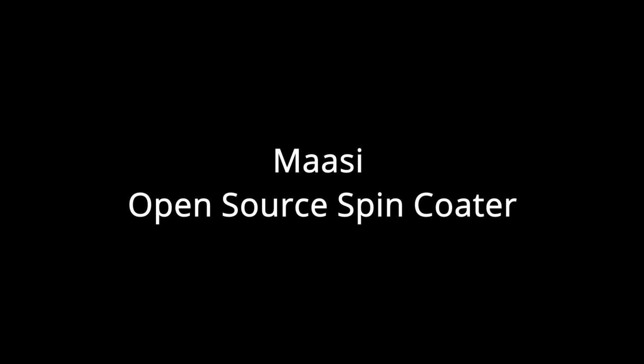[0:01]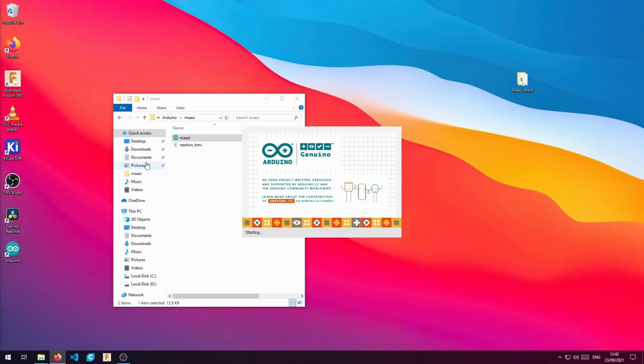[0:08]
How to build a Maasi open source spin coater. You're gonna need the parts you see in this picture. The first step is to compile and flash the ESP32.
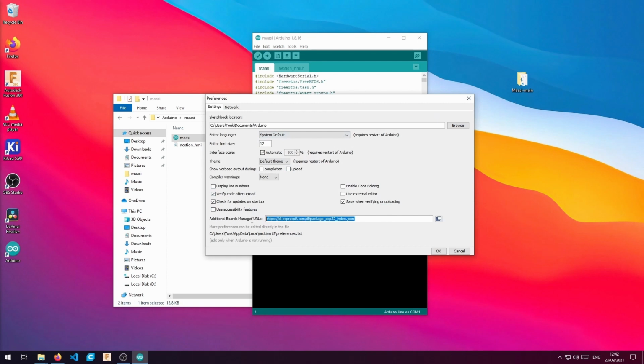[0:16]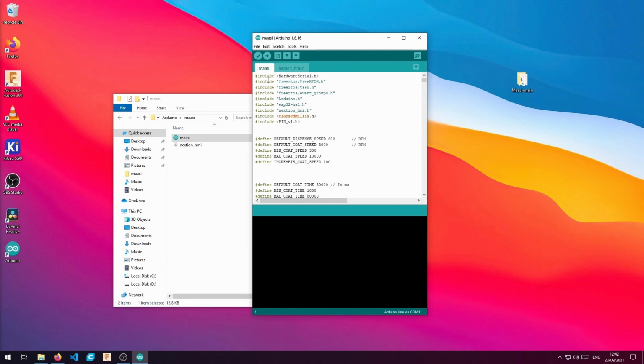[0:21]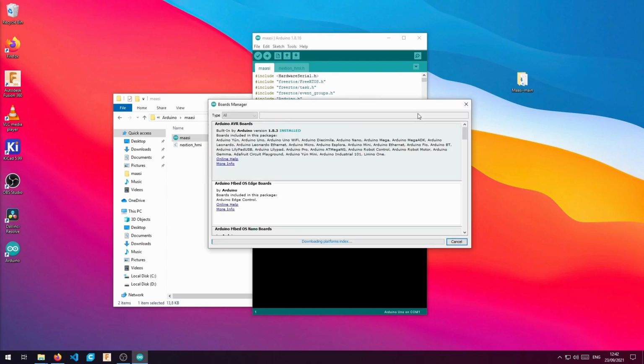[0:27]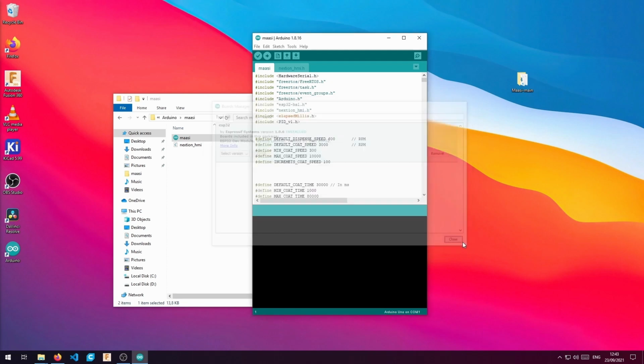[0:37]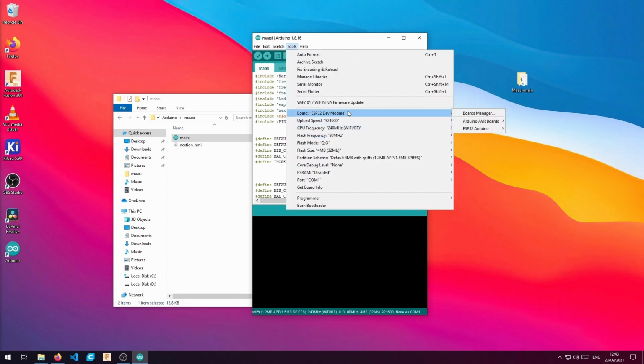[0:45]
To do so, we have to open the Arduino file and then make sure we have the Espressif board manager installed. You can find this address in the description of the video. Then, we will go to Boards, Boards Manager, and we will install the ESP32. We will select the dev module. After we plug in our ESP32, we will select the COM port.
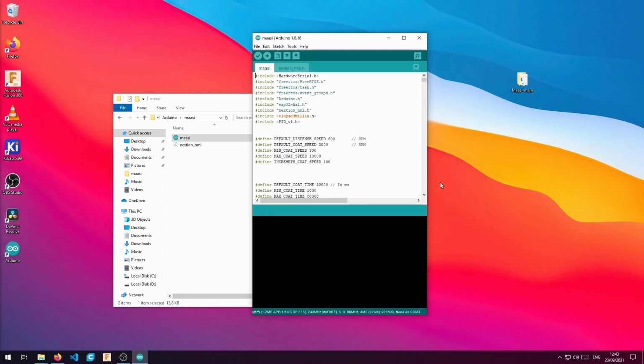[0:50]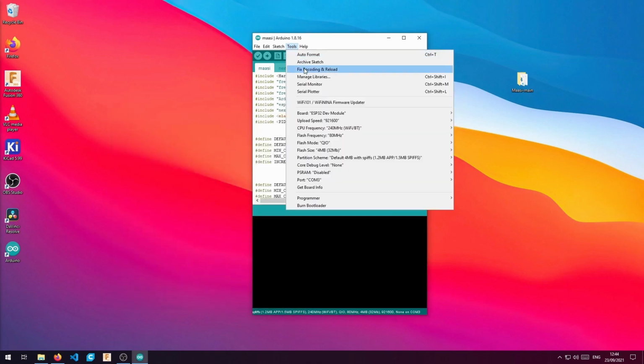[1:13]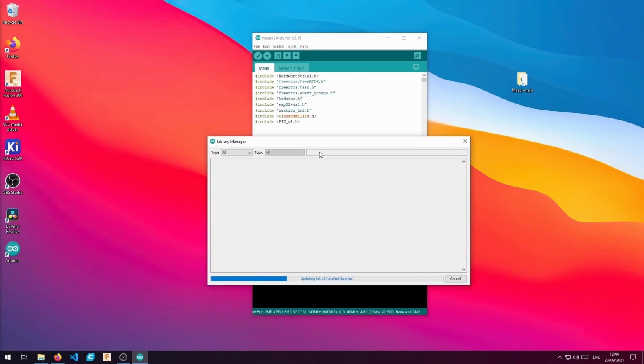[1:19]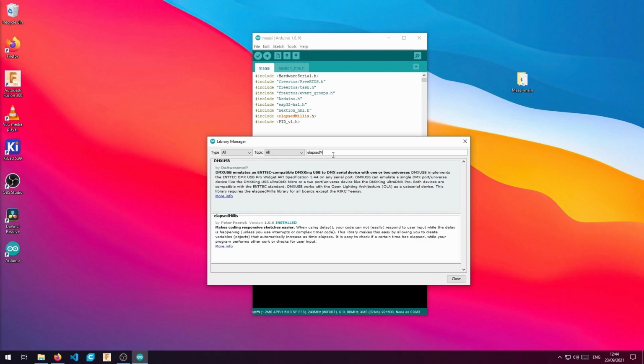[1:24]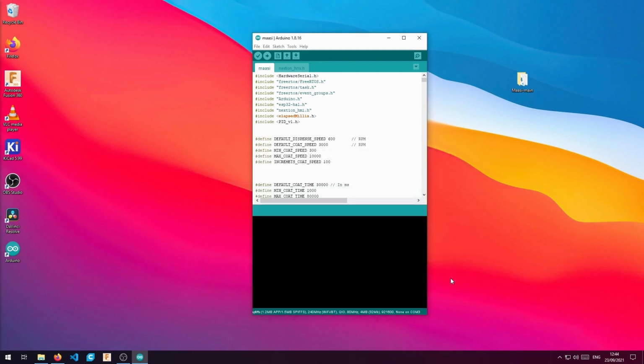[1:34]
Next step is to copy our Nextion library into the Arduino folder. As we see here, we already did this step before. Now we have to solve the other dependencies. We go to the library manager and we install elapsed millis and the PID library. Now we are ready to compile and upload the firmware.
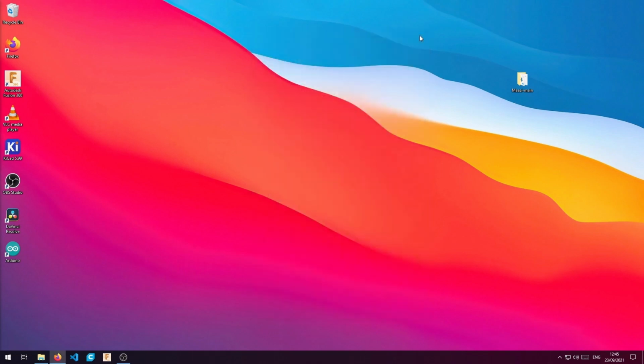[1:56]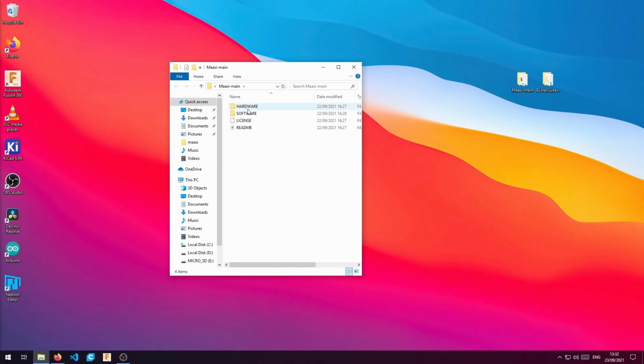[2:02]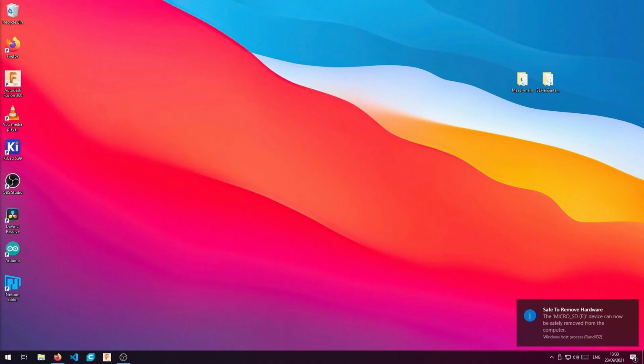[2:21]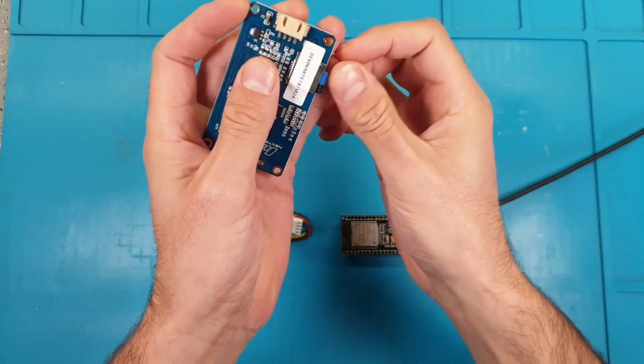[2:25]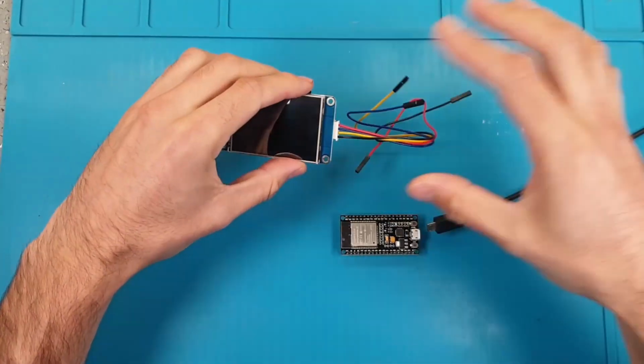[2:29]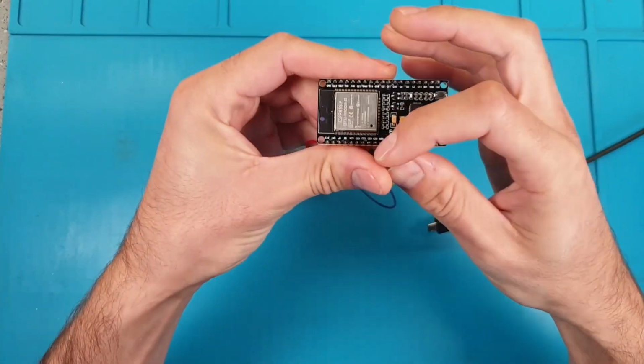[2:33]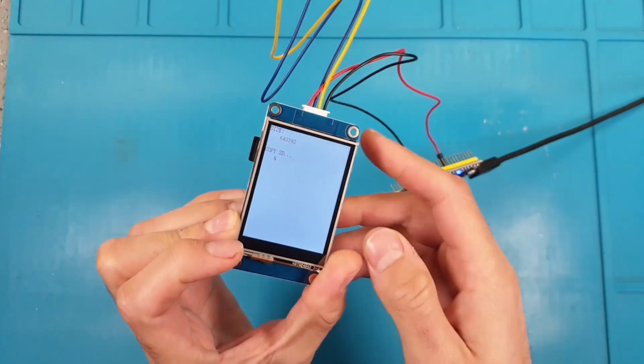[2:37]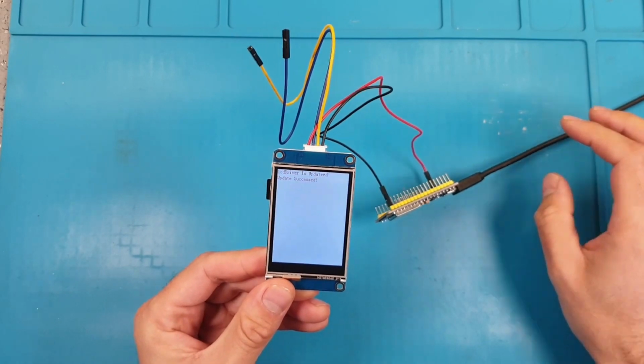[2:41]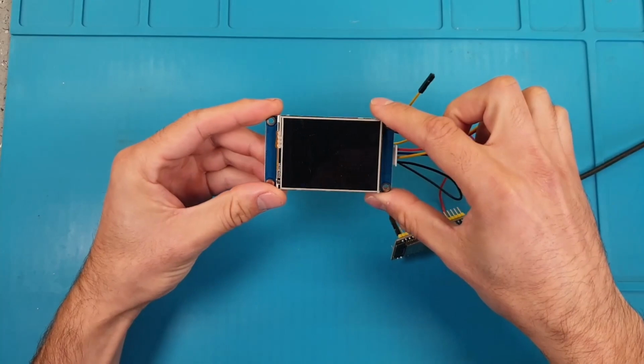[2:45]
Next step is to flash the Nextion display. We only need to copy the precompiled project in our Nextion folder to our micro SD card. Then we have to install the micro SD card in our Nextion display. And we are going to use the ESP32 to power the display. So we have to connect the red and the black cable to 5V and ground respectively. Then we have to power the ESP32 and wait for the display to flash the firmware. When it's finished, we can remove the microSD card and reboot to check it's working.
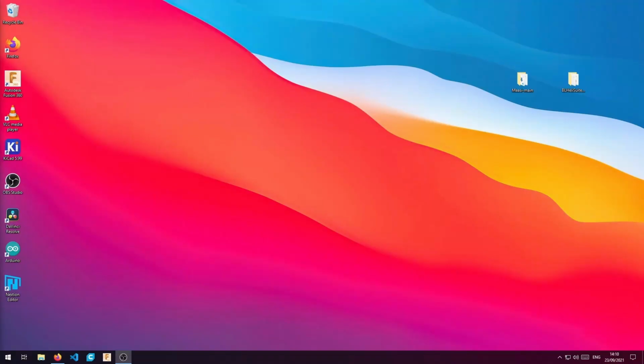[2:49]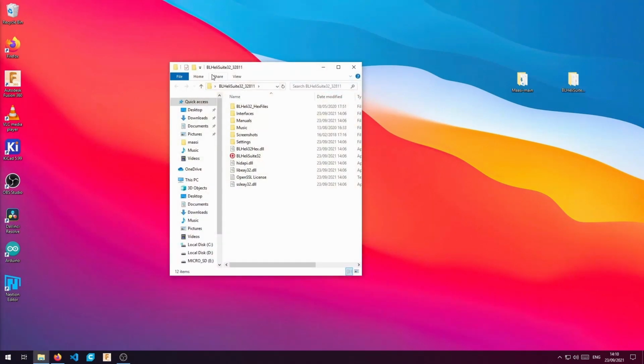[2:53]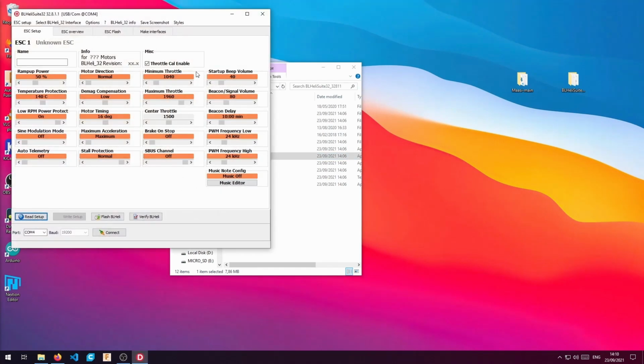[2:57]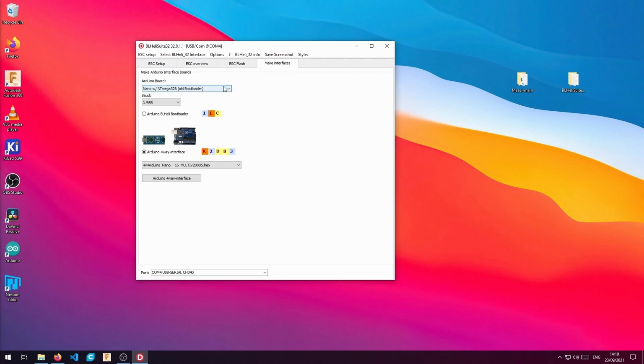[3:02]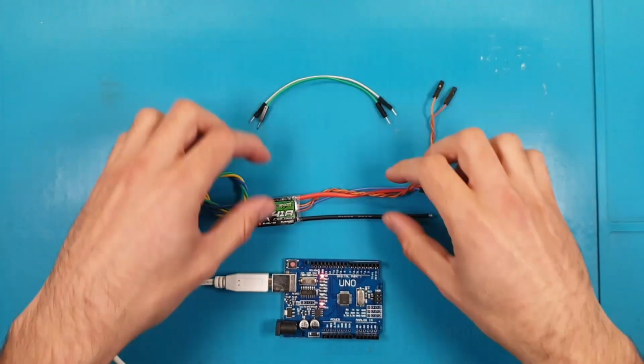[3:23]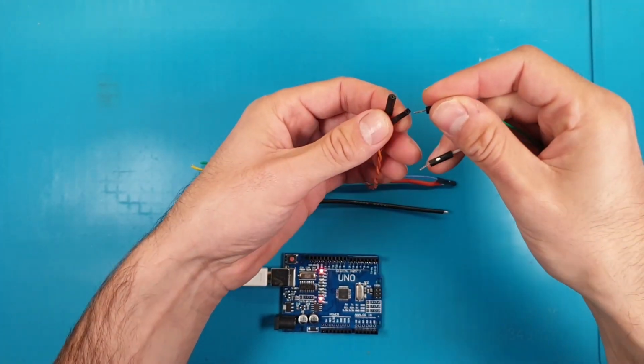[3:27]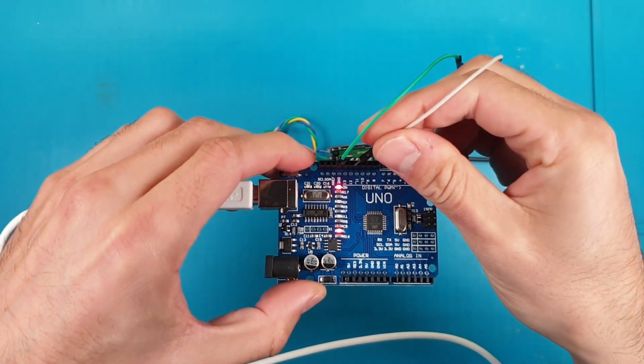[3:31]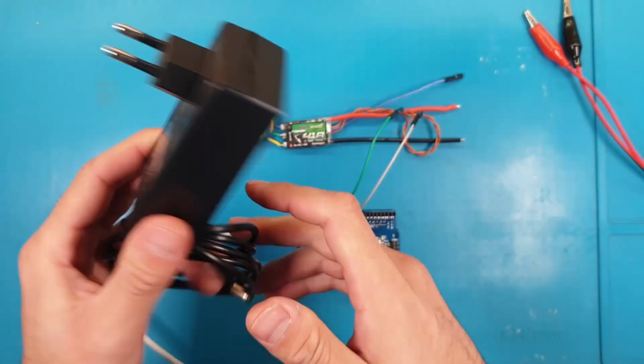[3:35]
The next step is to flash the ESC with the latest BLHeli32 firmware. We will need to download the BLHeli32 suite and prepare the Arduino Uno as flashing device. We select our Uno port and the corresponding COM port. Now we have to connect some jumper cables between the Arduino Uno and the ESC. One is the ground cable and the other is the signal. The signal cable connects to pin number 11.
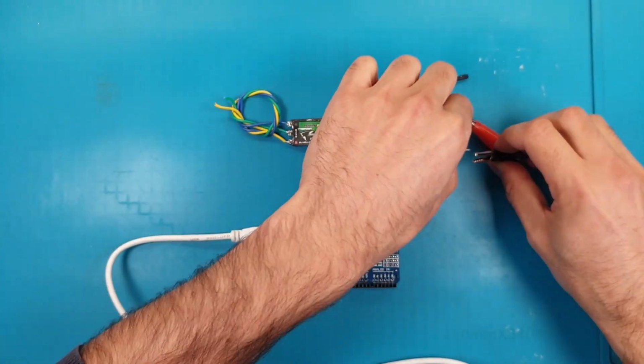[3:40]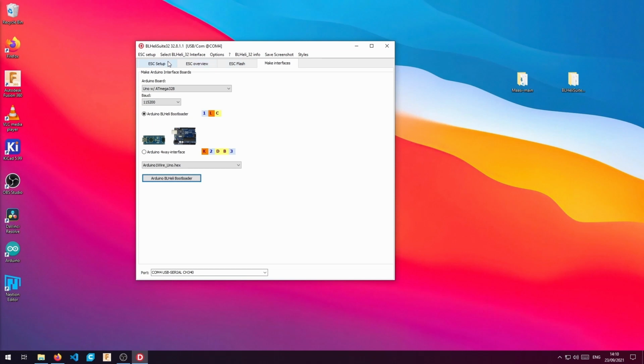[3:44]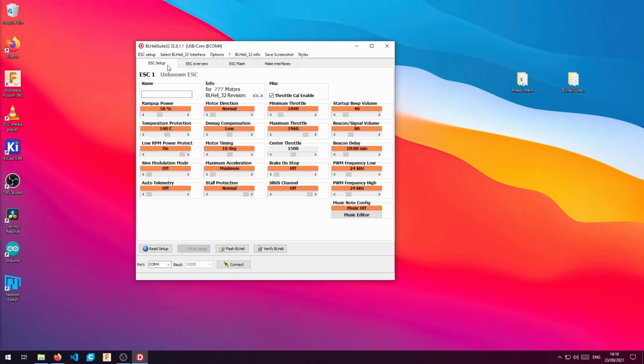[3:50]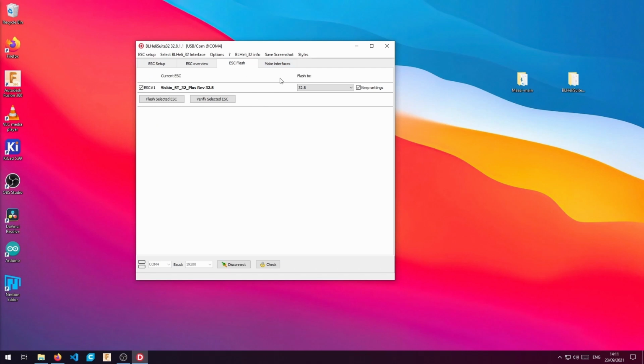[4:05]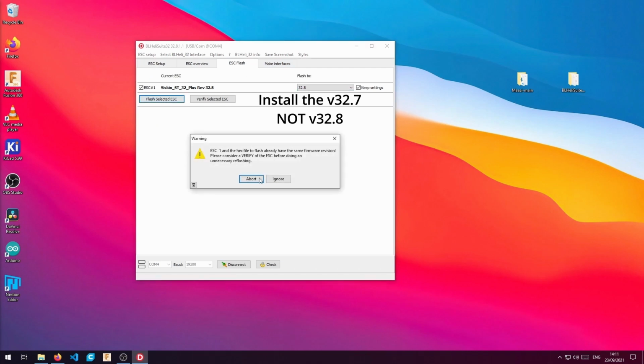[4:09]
And now we have to power the ESC. We can either use a lab power supply or the one for our spin coater. Now in the software we have to choose the USB COM option and make sure the COM port is the correct one. Now we connect and we read the setup. It's important to install the 32.7 version. Newer versions of the firmware will cause instabilities.
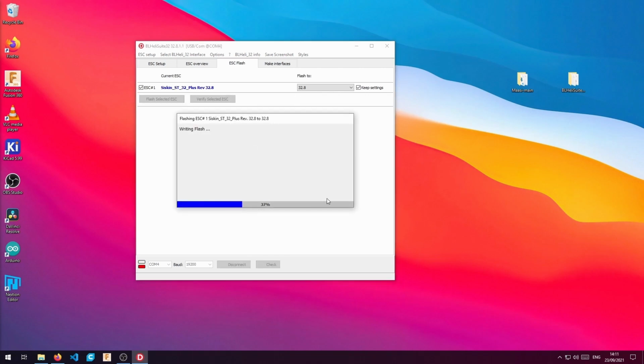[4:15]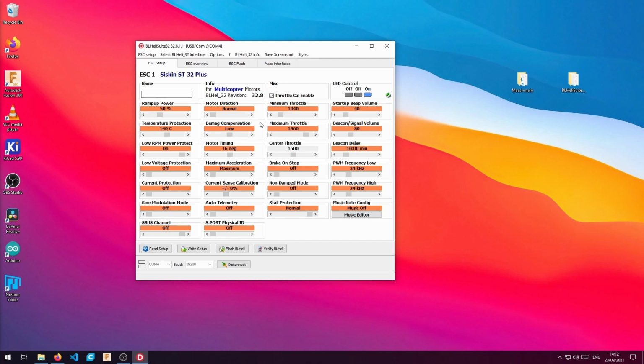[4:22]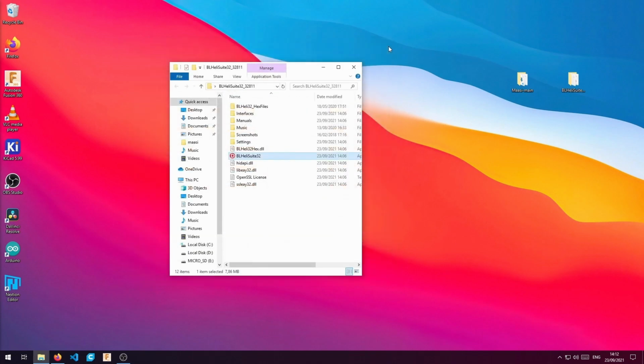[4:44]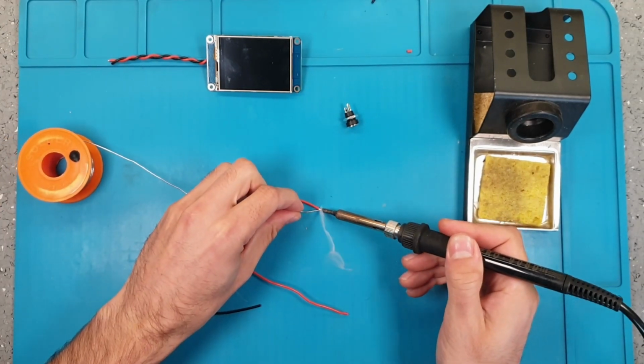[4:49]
Once it's finished, we come back to the ESC setup tab and we read again the parameters. We will increase the beacon delay to avoid having the ESC beeping after some period of inactivity. We can also reduce the volume and switch off the LEDs. Finally, we will write the setup and disconnect. Congratulations, you're done with the flashing of the electronics. Now we can start putting together all the components.
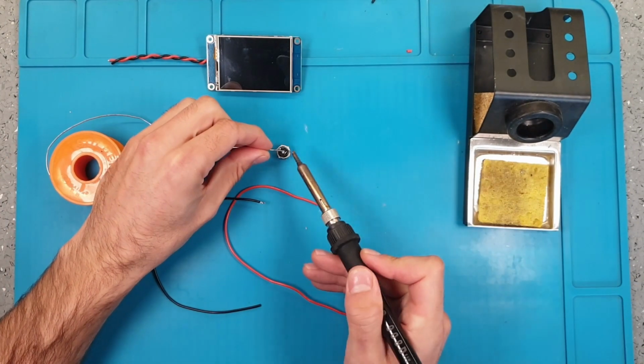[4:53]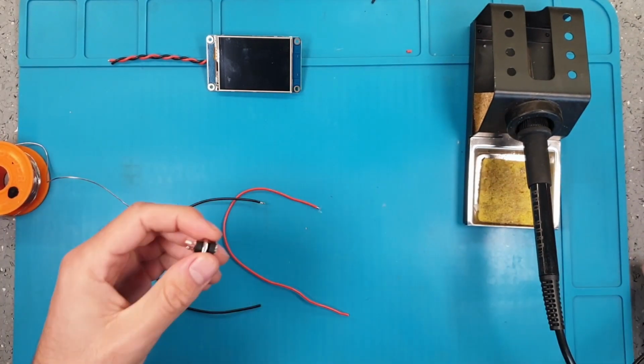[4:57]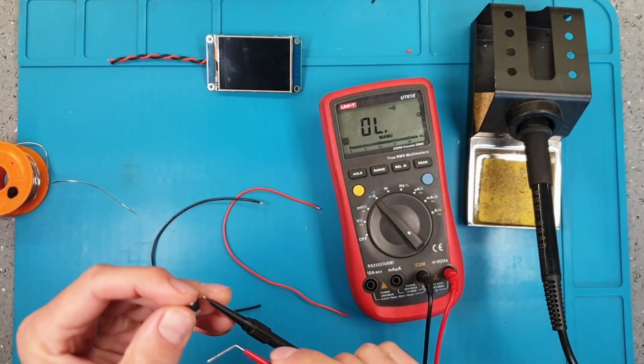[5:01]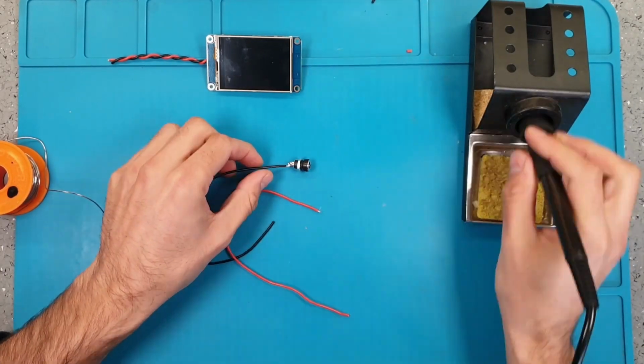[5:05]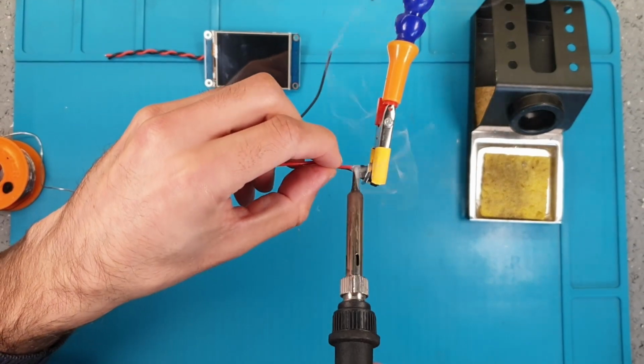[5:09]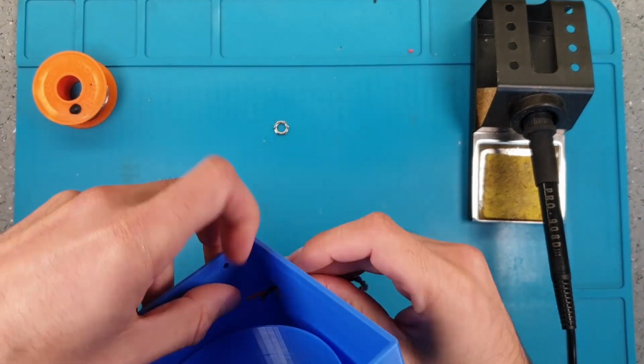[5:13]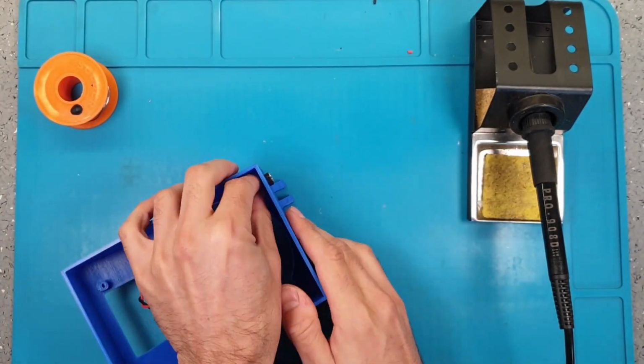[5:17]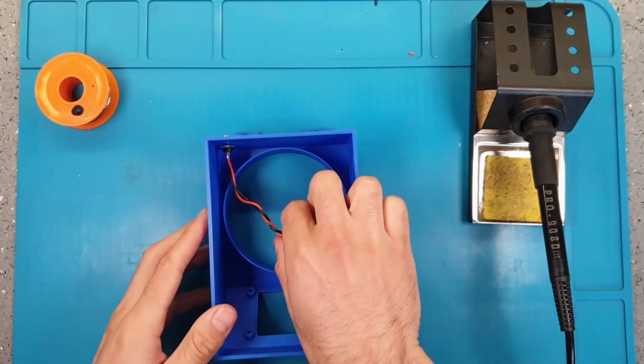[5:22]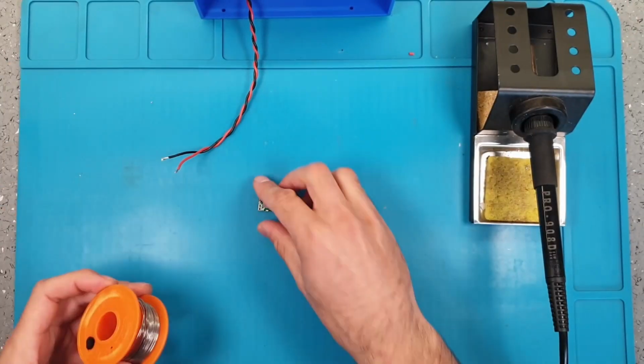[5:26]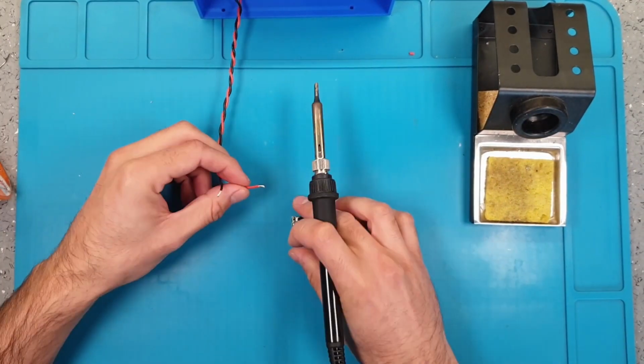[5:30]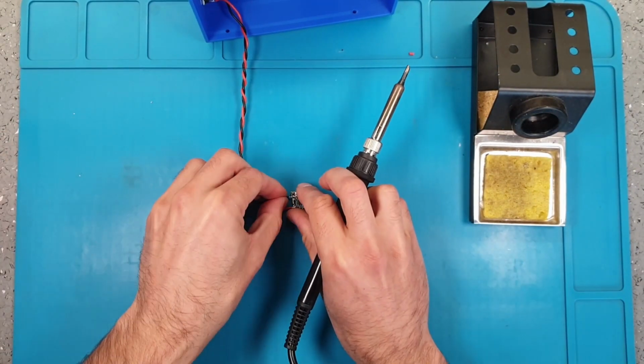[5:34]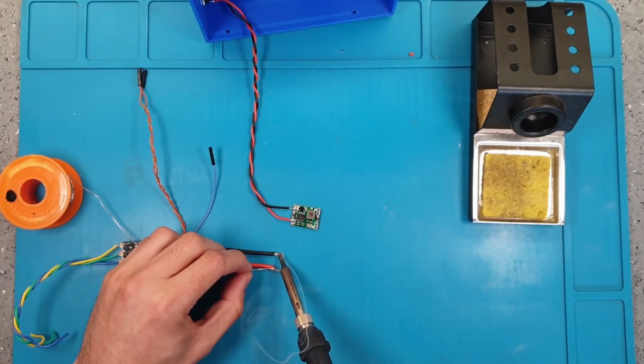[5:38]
We will start with the power plug. As you can see in the video, it's very useful to pre-tin the cables and the pins. Then with a multimeter, we will make sure the polarity of our plug matches the polarity of our power supply. After securing the power connector, we will solder the DC-DC. And then the ESC power.
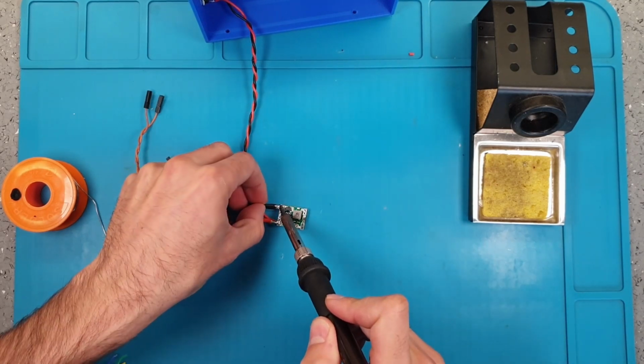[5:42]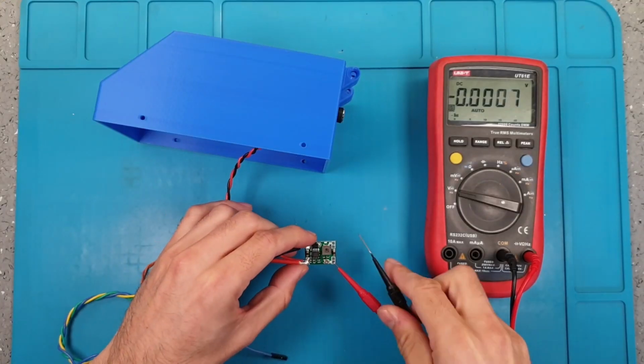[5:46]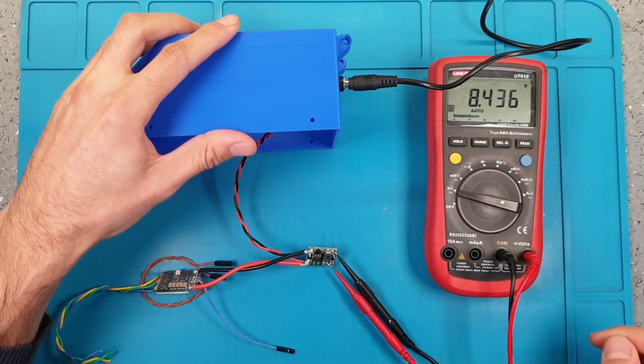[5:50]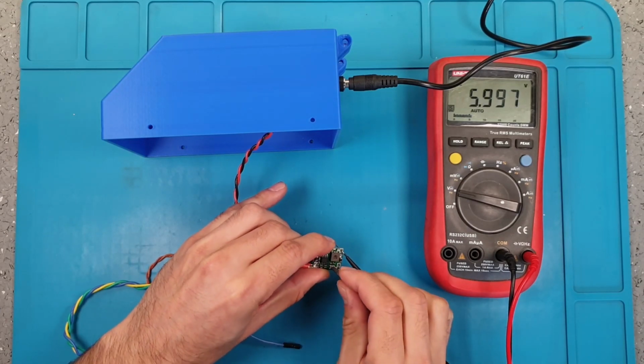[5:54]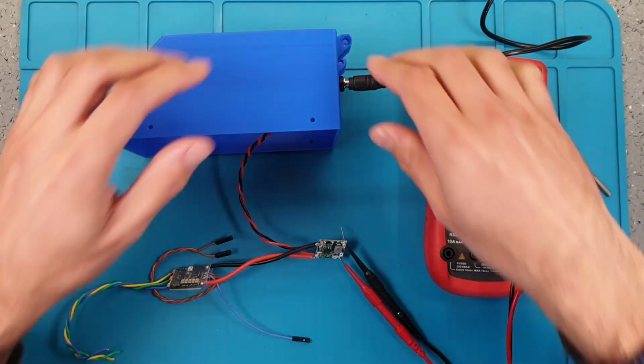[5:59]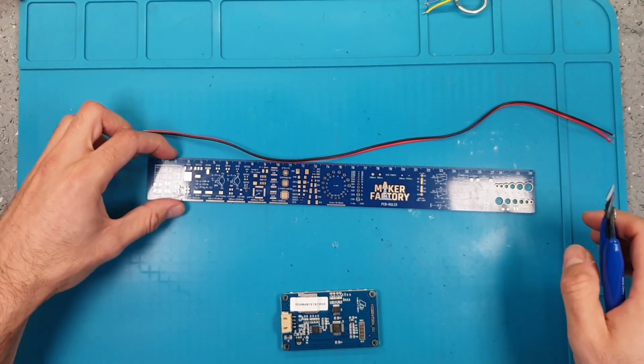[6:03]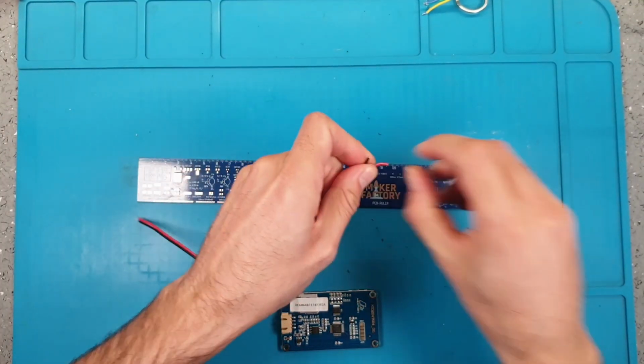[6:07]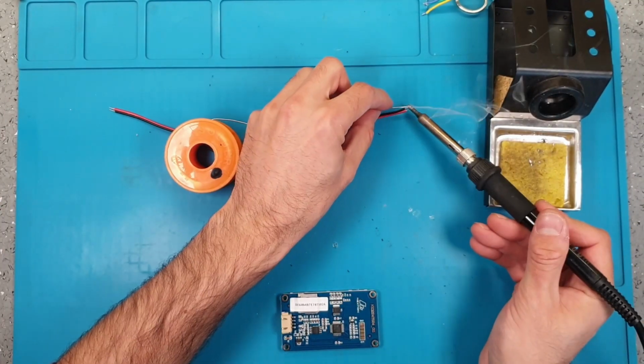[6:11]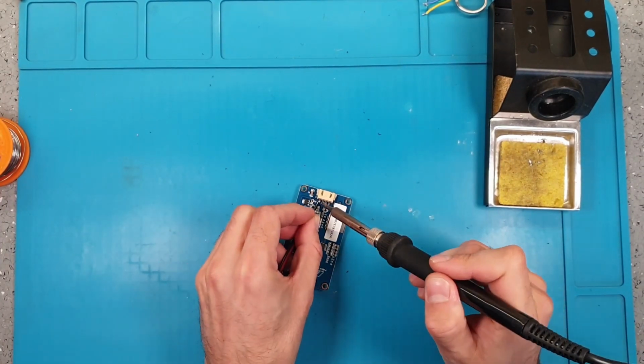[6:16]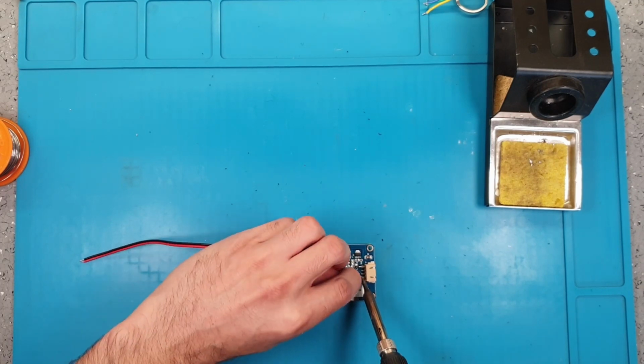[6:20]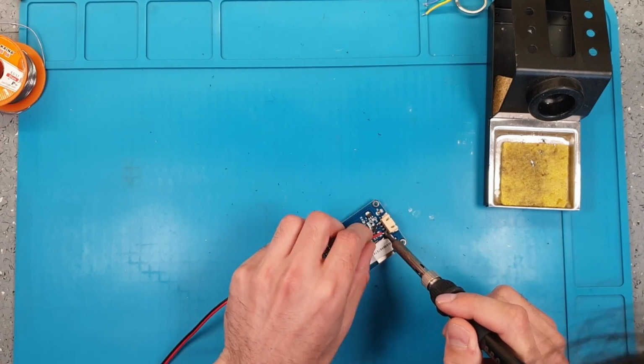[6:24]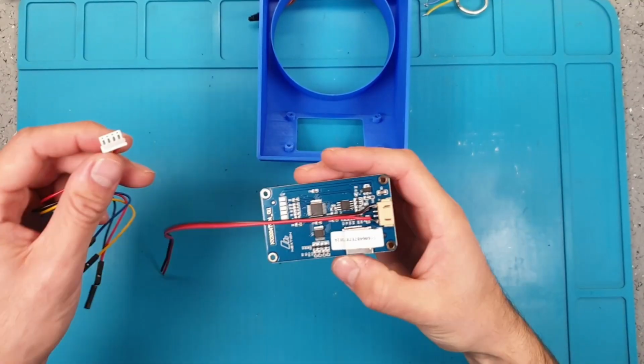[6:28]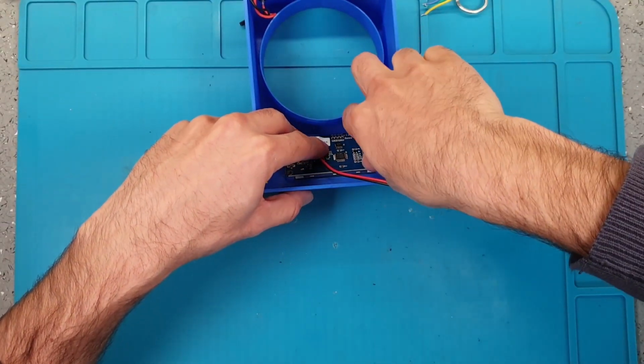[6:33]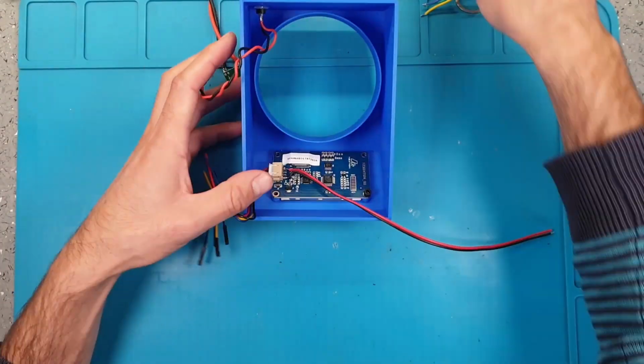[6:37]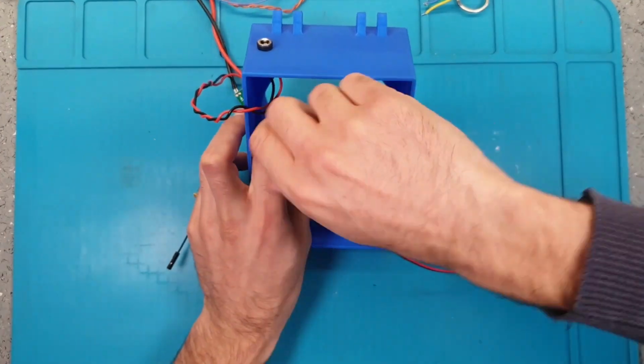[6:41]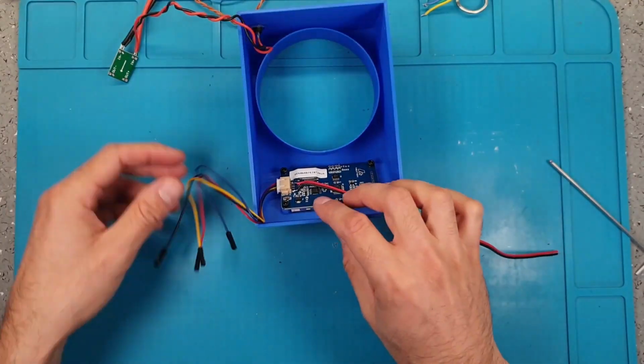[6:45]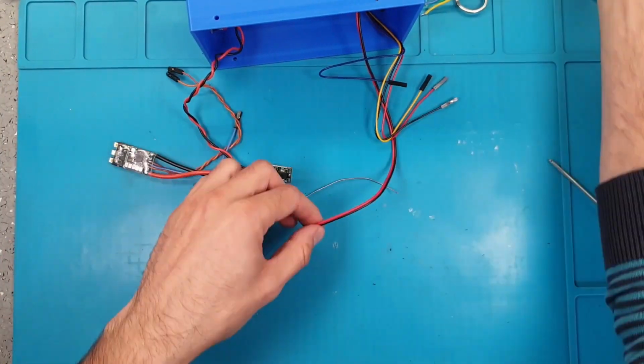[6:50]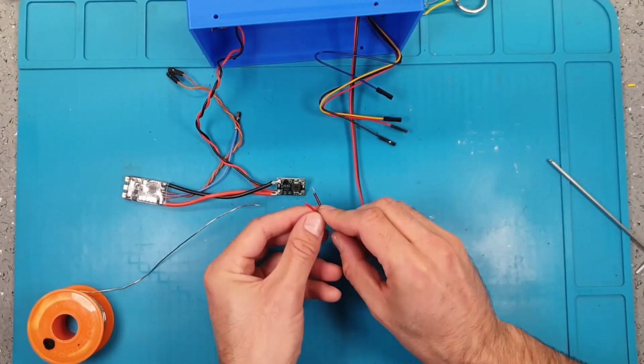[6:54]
In our case, we have an adjustable DC-DC, so we use a multimeter to make sure the output of our DC-DC is 5 volt. Before installing the display, we need to cut about 25 centimeters of cable and then solder it to the back part of the connector. After adding the connector, we can secure the display in place using M3 bolts. Now we can solder the display to the DC-DC.
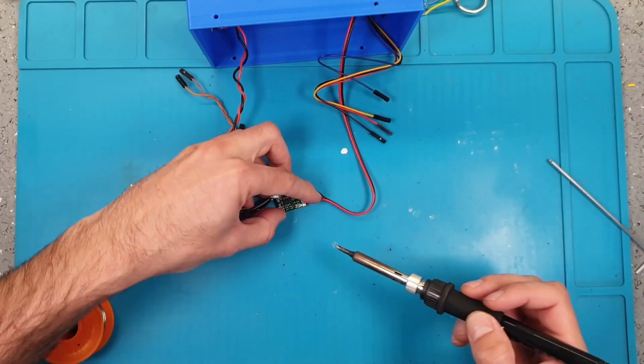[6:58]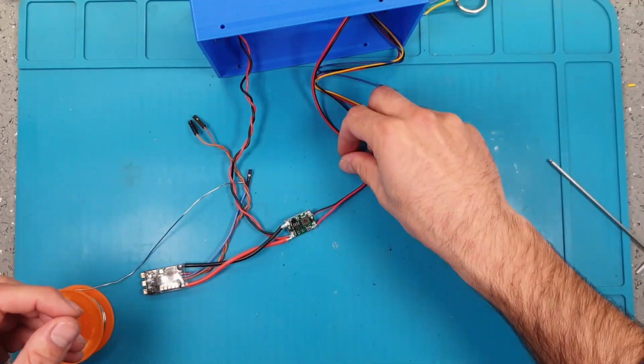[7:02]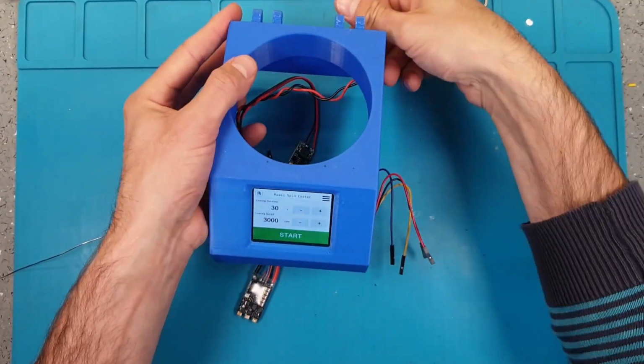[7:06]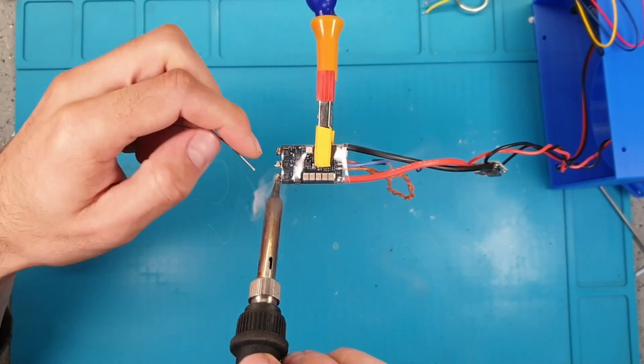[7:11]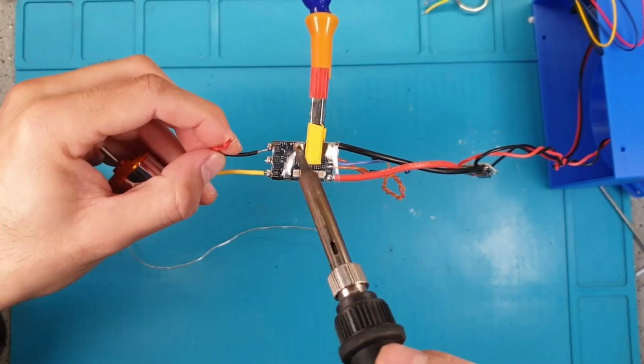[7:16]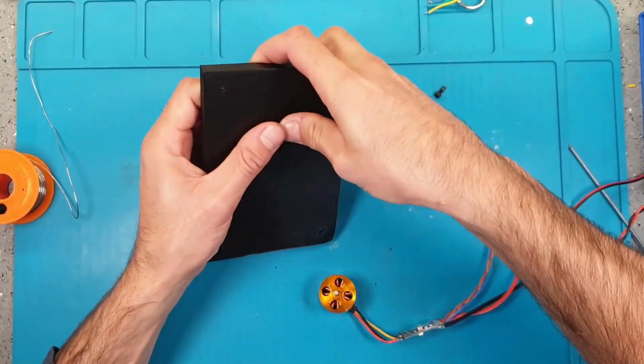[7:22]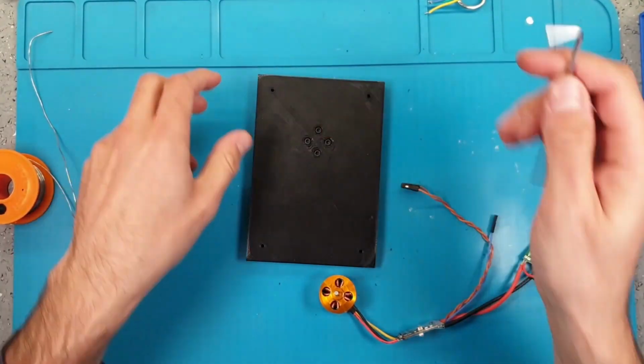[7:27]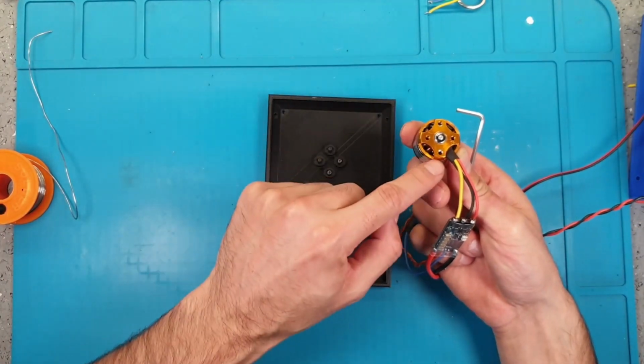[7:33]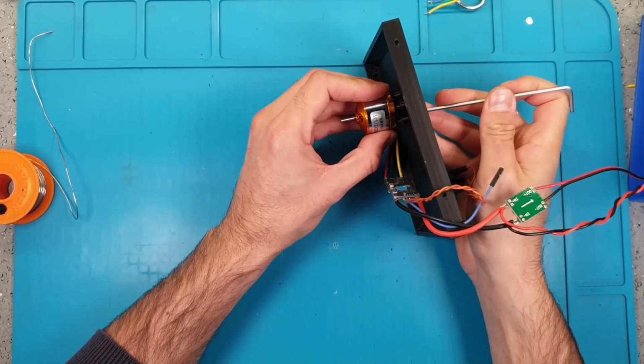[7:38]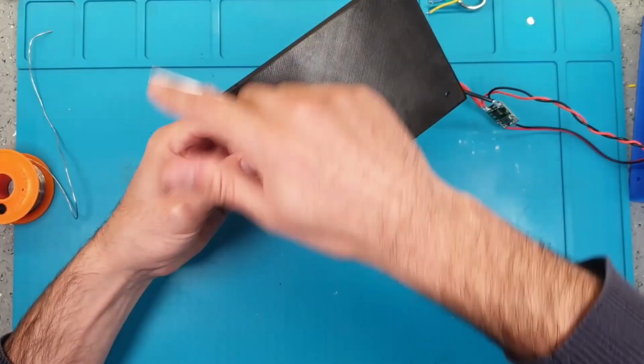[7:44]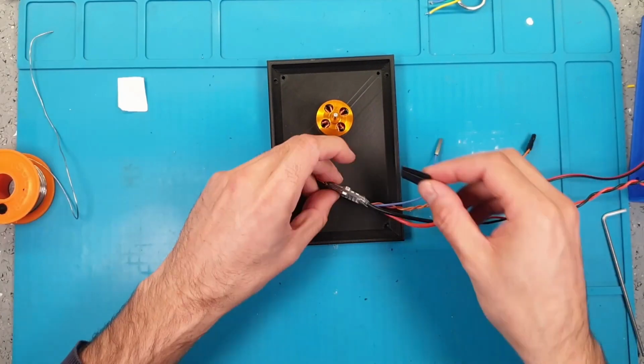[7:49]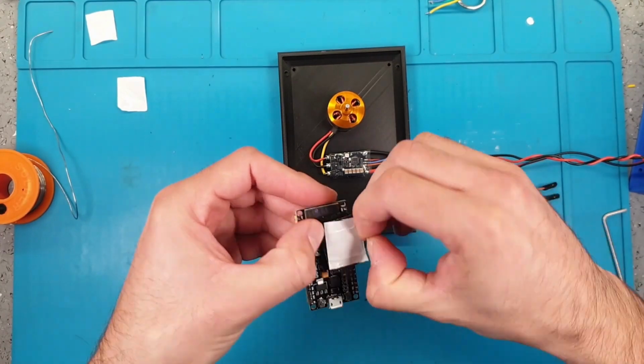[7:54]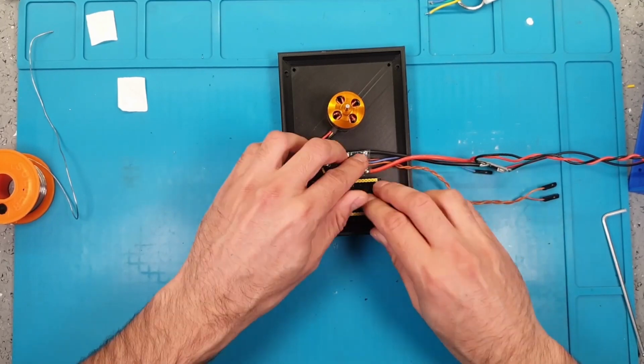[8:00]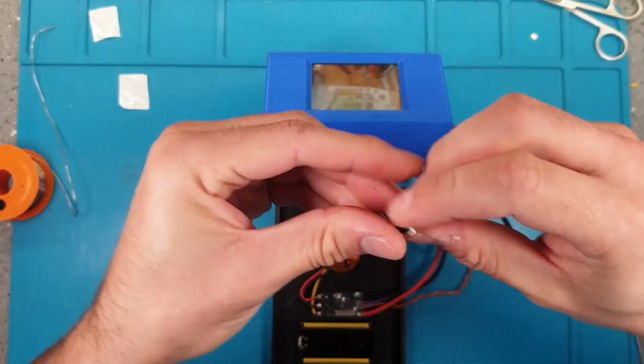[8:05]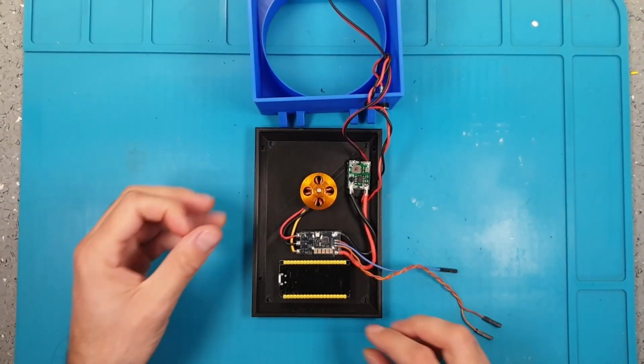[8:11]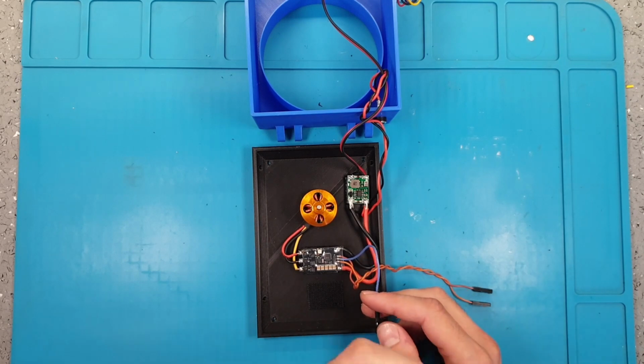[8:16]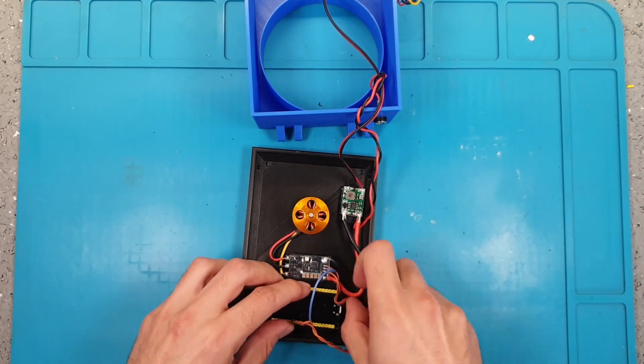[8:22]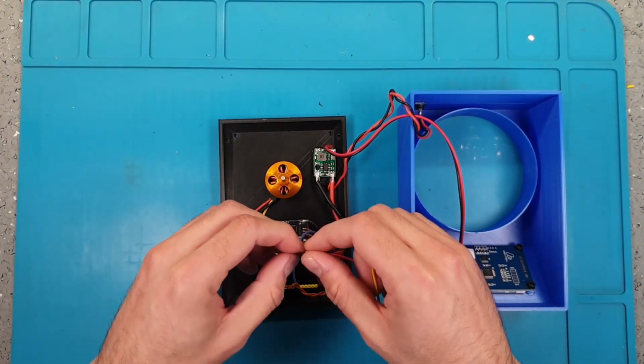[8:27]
It's time to install the ESC, the motor, and the ESP32 in place. Pre-tinning the ESC solder pads might help to solder the motor cables. Note that the motor sits in a specific orientation. To secure the electronics, we're gonna use some hook and loop adhesive tape. When everything is in place, we can connect our ESP32 to the ESC and the display. Before powering everything, make sure your connections match the schematics.
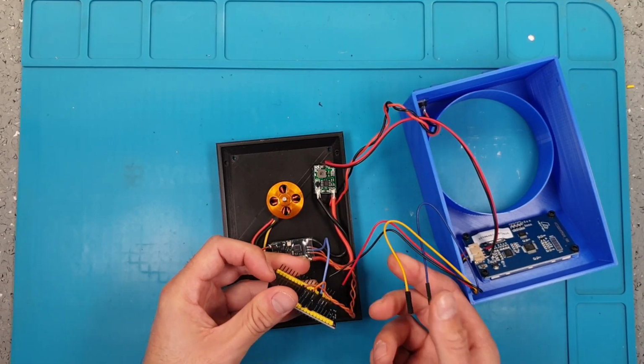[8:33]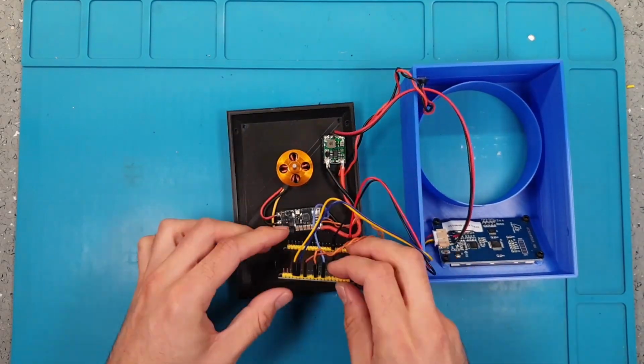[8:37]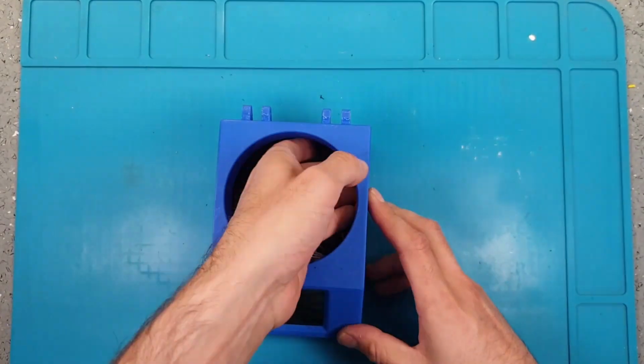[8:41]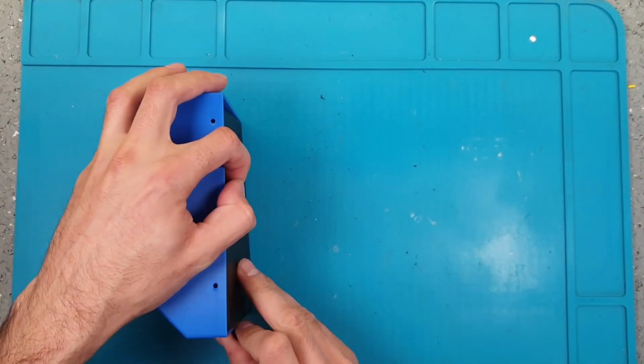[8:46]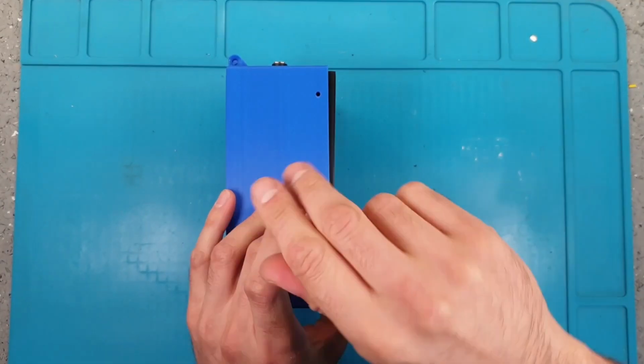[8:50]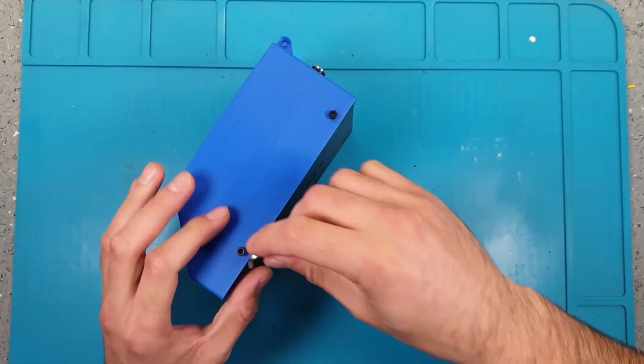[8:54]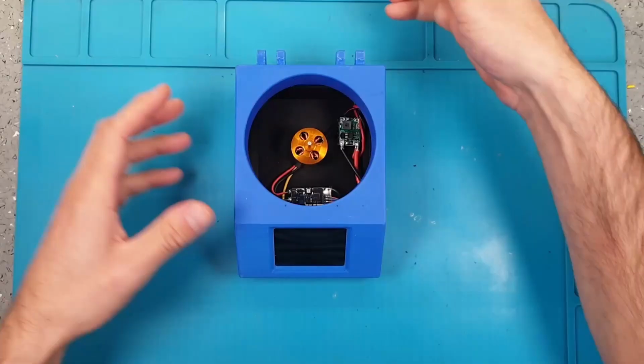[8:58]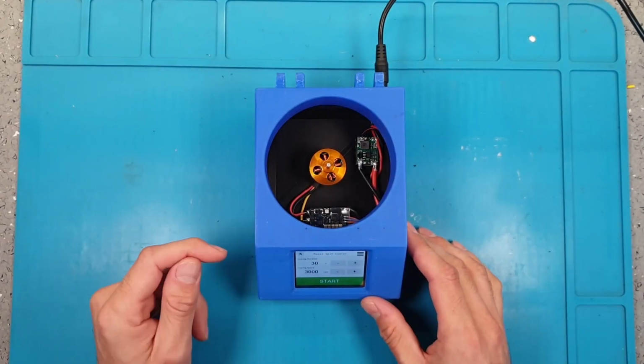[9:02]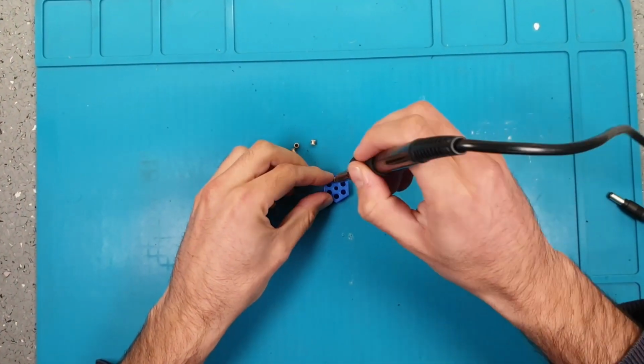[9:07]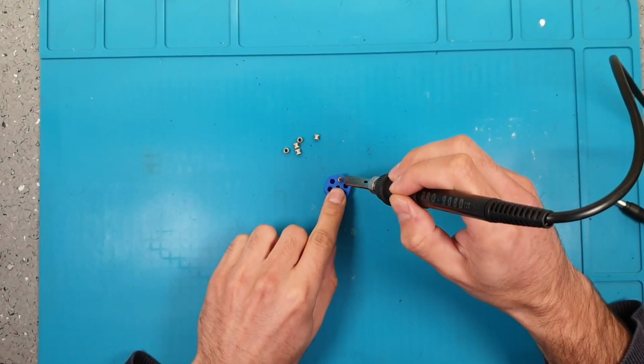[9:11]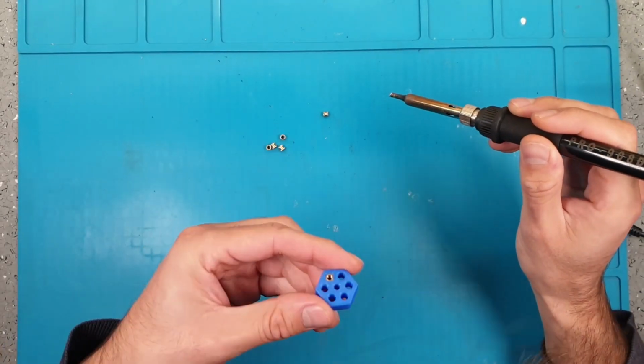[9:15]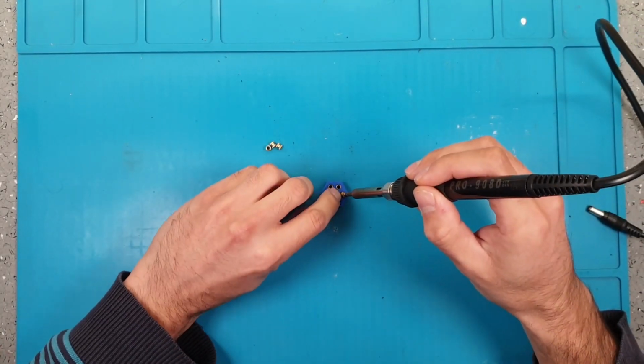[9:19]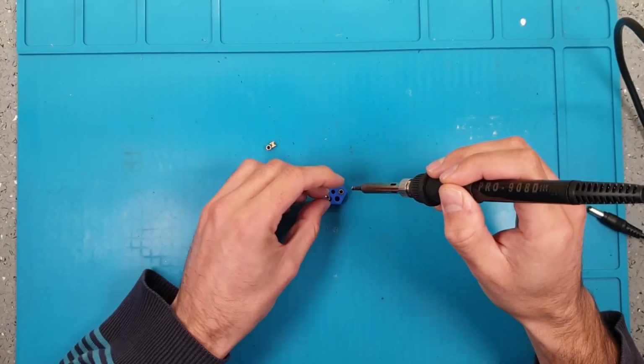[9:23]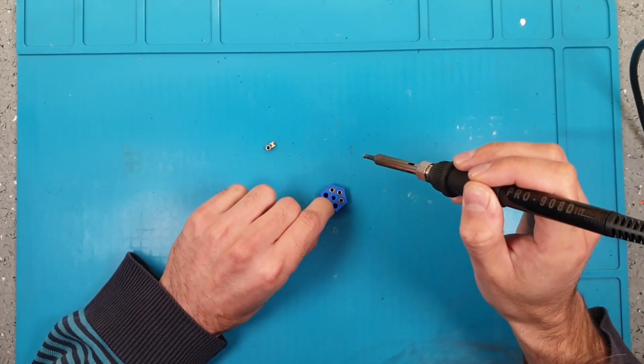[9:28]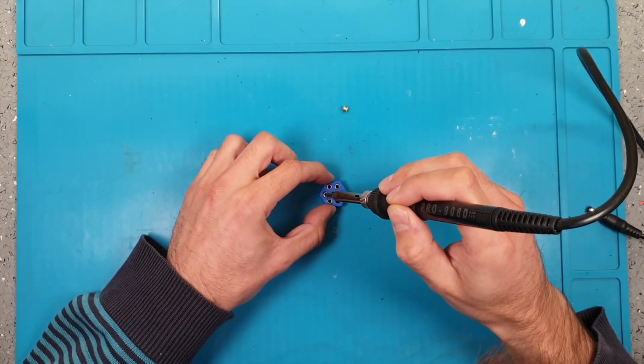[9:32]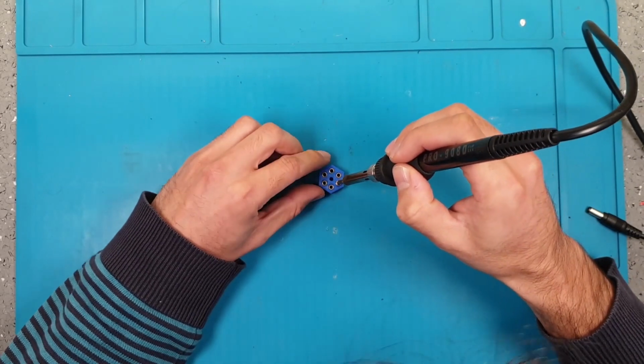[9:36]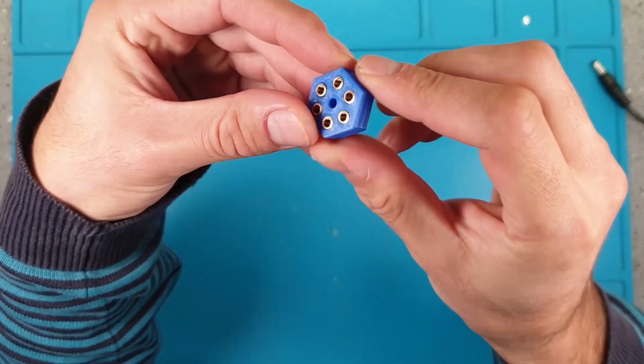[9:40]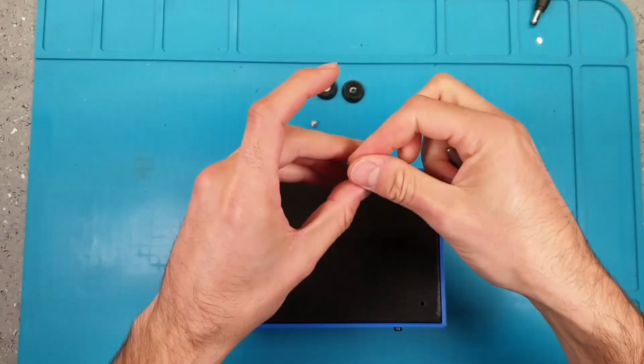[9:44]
We can finally install the housing and secure it with M3 bolts. Next step is to install the heat inserts in the motor shaft. To do so, we will use a soldering iron. Try to keep the inserts as flush and vertical as possible. To install the rubber feet, we will use again M3 bolts.
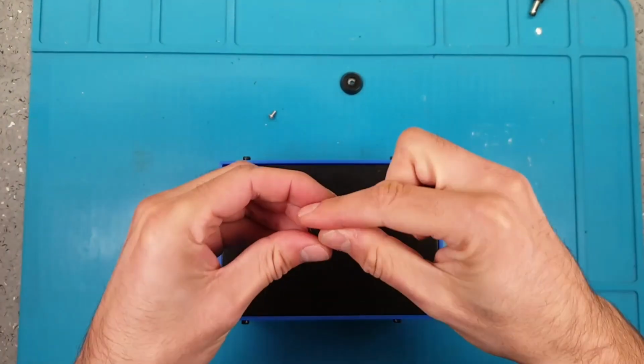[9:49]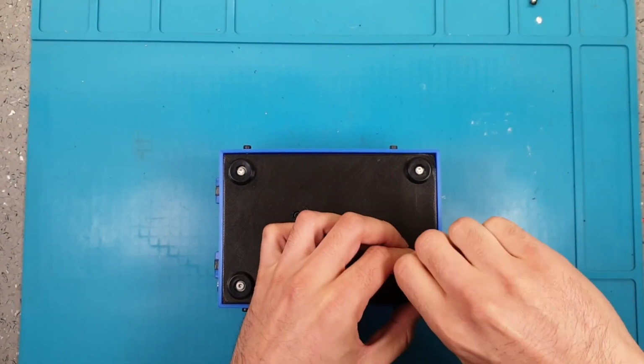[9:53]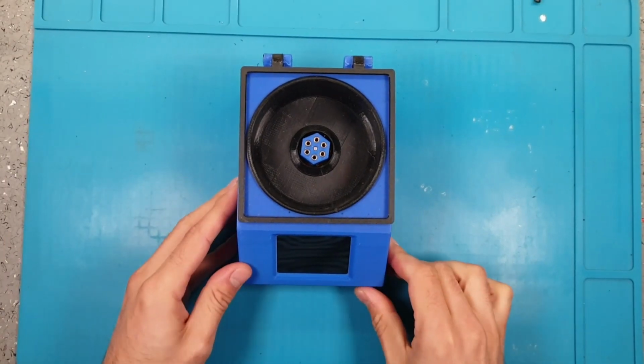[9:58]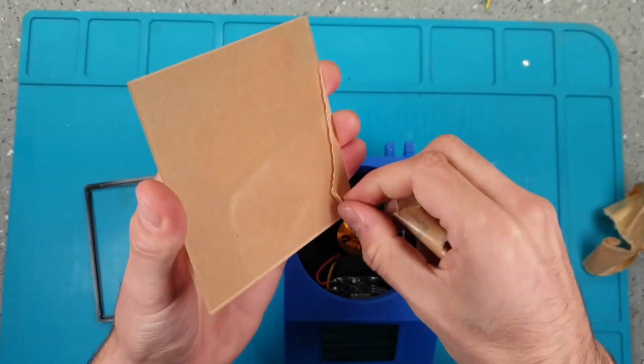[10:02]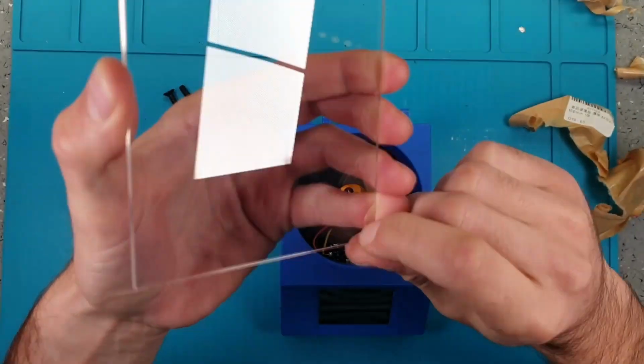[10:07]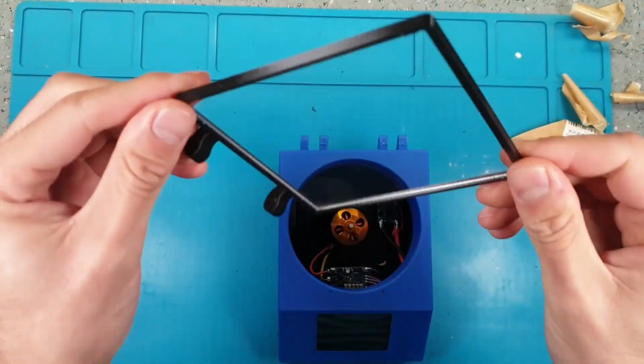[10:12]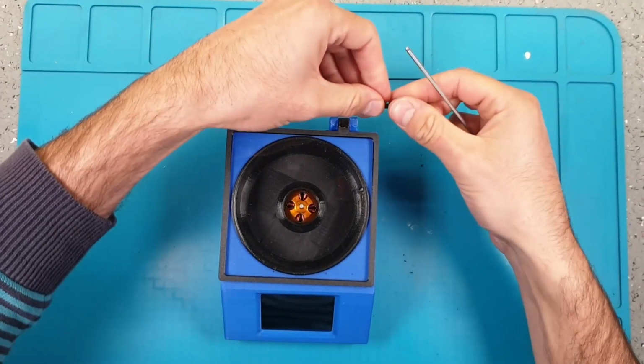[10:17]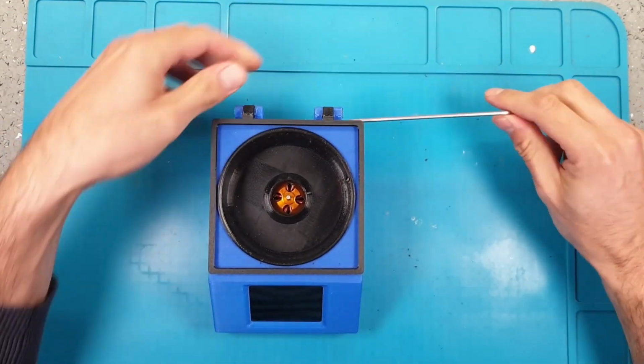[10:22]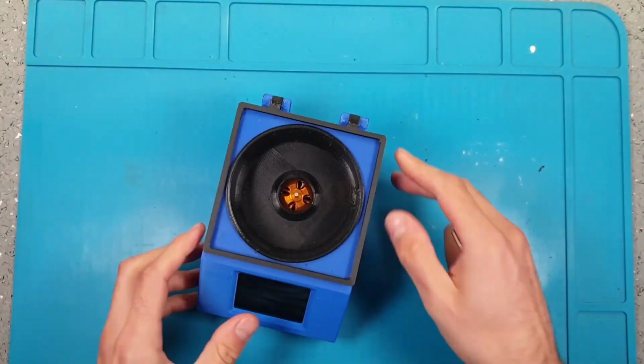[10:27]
We are almost done. Now we only have to prepare the lid. We just need to remove the protective film for the plexiglass and press fit it into the frame. To attach the lid to the housing, we're gonna use 20mm long M4 taper bolts. The last steps are to press fit the shaft adapter and to install the vase.